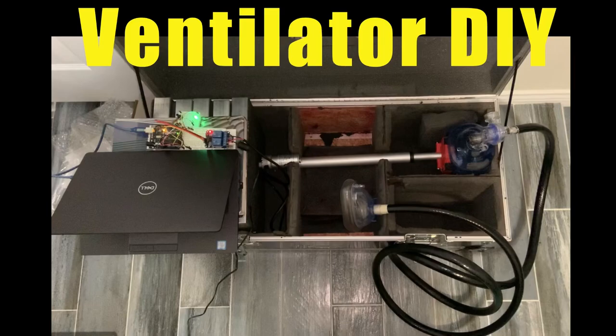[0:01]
Hi, in this video, I'm going to be showing you guys how to make a ventilator out of some common things you can buy off Amazon or hardware stores. With this pandemic going on, calling all engineers and tinkerers to start thinking about cheap solutions to create ventilators as a need across the world is requiring them.
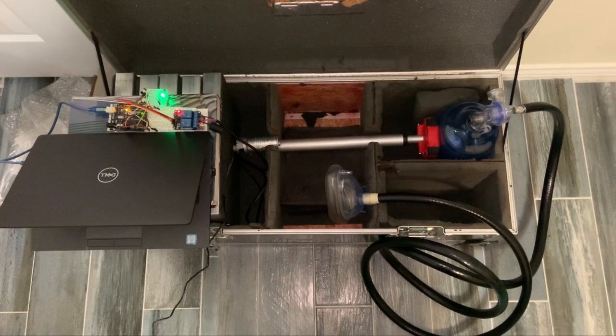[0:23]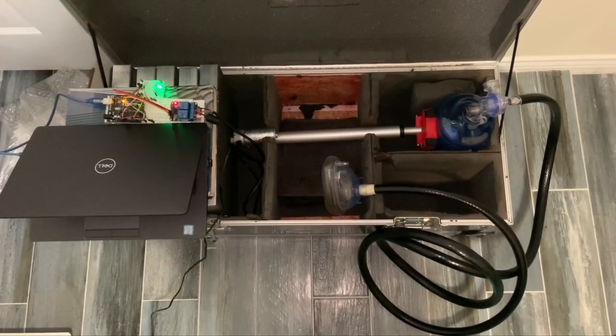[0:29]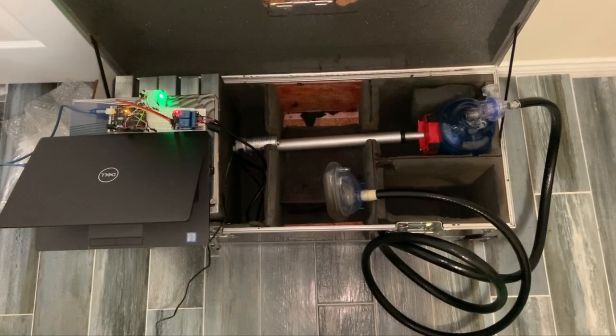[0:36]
So the concept I came up with is using a linear actuator, compressing a BVM bag to supply oxygen to the lungs of a patient. Here's a list of my equipment. In total, it was less than $200 to create this setup.
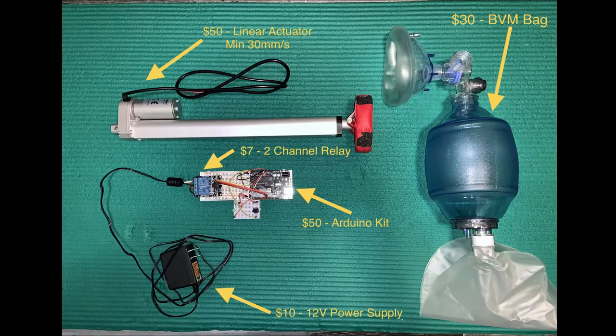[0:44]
You'll first need a BVM bag, which is used for CPR usage. I found mine off of Amazon for less than $30. You'll need a linear actuator that travels from 6 to 12 inches, depending on how you want to set up your fixturing. That cost me $50. I also recommend getting one that moves faster than 30 millimeters per second, which is a little over an inch a second. This ensures that you're going to get the right frequency to compress the BVM bag.
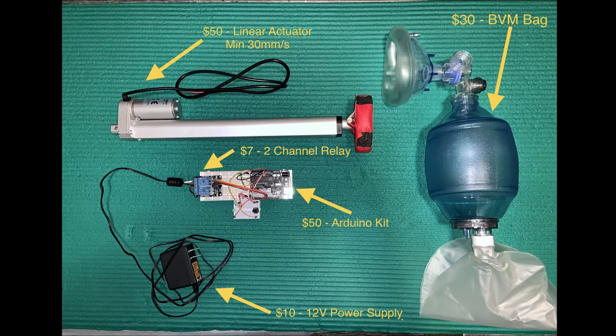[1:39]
Another thing that you'll need is an Arduino kit, which cost me $50 off of Amazon. This provides you with the board and electrical connectors and sensors for everything that you would need. You'll also need a 2-channel relay, also got off of Amazon for $7. This allows you to control the linear actuator, reversing the polarity, allowing it to retract and extend during use to compress the BVM bag. And to power the linear actuator, you'll need a 12-volt power supply. You may have these lying around in your house, but if not, you can find one off of Amazon. I found one for $10, and that's used to power the linear actuator.
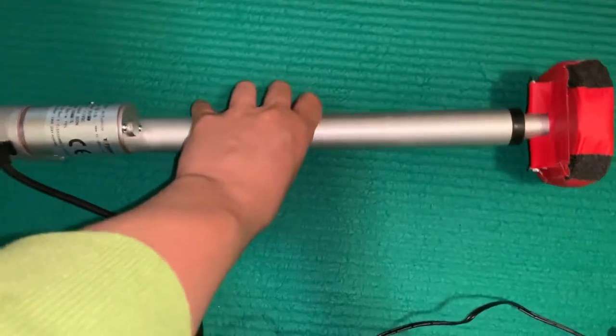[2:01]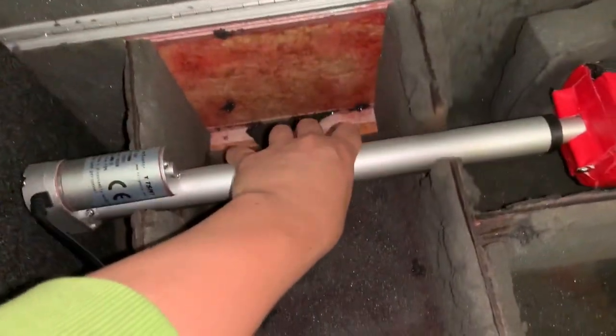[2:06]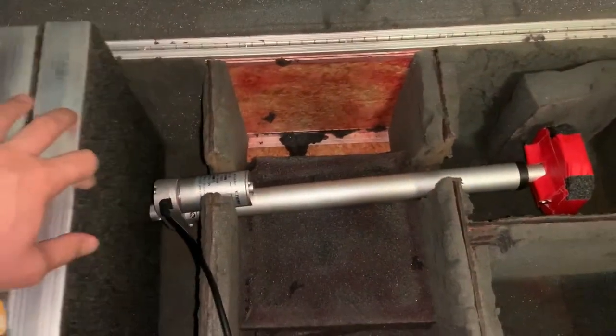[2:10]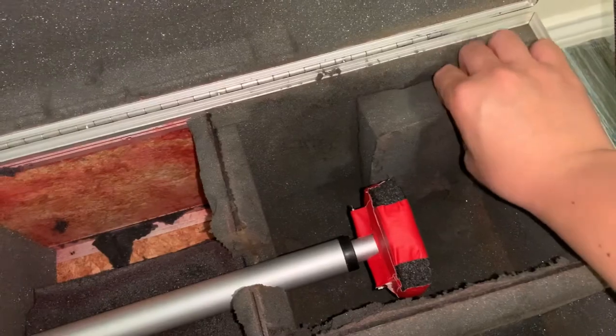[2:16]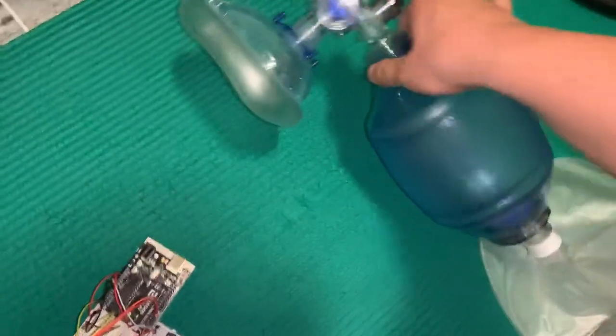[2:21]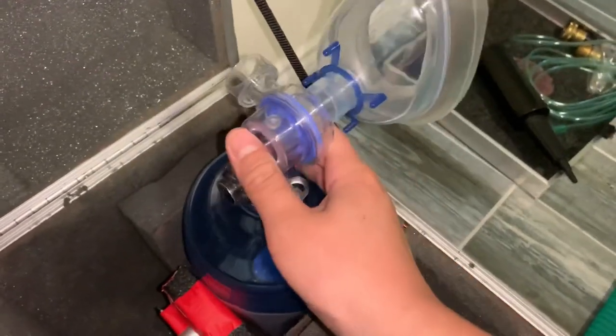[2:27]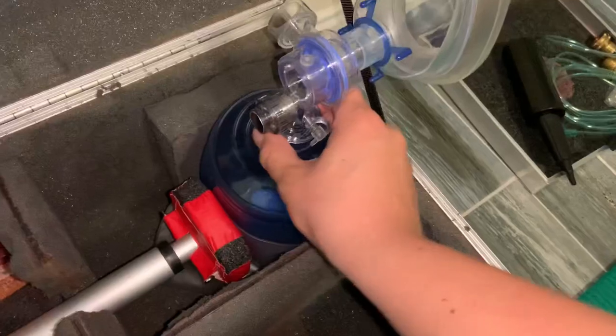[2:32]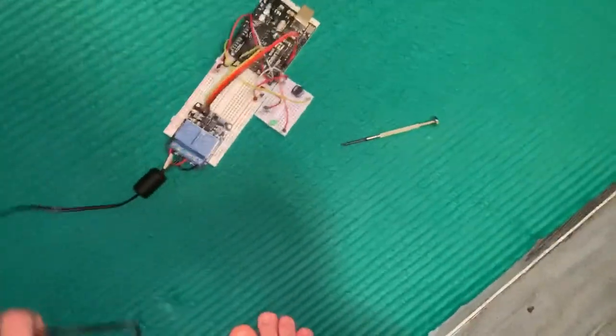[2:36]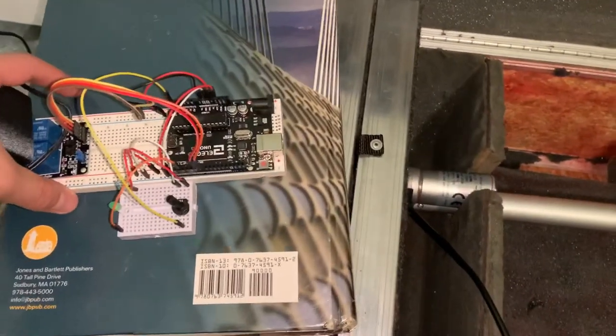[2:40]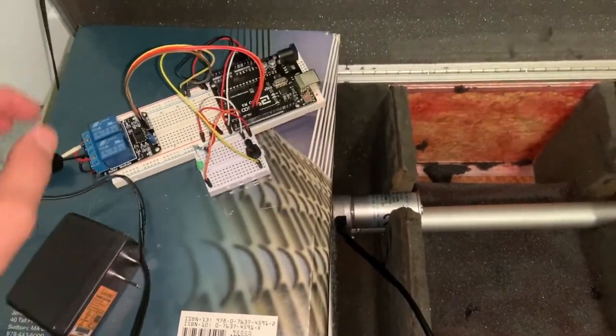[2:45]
So in this section, I am mounting the linear actuator into a housing. You guys can use wood or something to clamp down on the linear actuator so that it allows it to retract and extend on the BVM bag. You'll need something to secure the BVM bag against a wall as well. So here I'm putting it up against a cavity in this box that I have. And then I'm placing the logic board, the Arduino board, near the linear actuator, and I'll be connecting the electrical connectors into the two-channel relay to power the linear actuator.
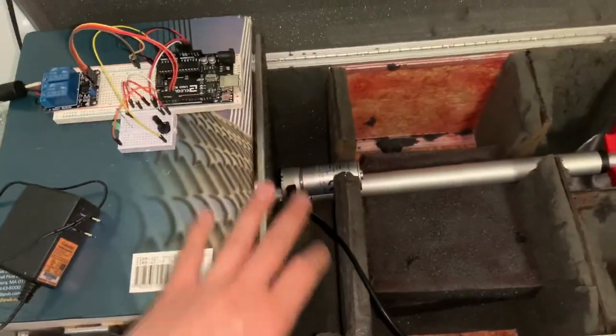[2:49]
So here is the wiring setup for the Arduino and the two-channel relay. On the left, you see there's a two-channel relay that's connected to the Arduino board. So there's four lines. One line is going to a 5-volt line to power the two-channel relay. One line is to ground. And two, the red and the orange, are connected to the digital pulse width modulator pins on Arduino, channel 6 and 7. This is where I would send commands to the relay to reverse the polarity of the 12-volt signal to extend and retract the linear actuator.
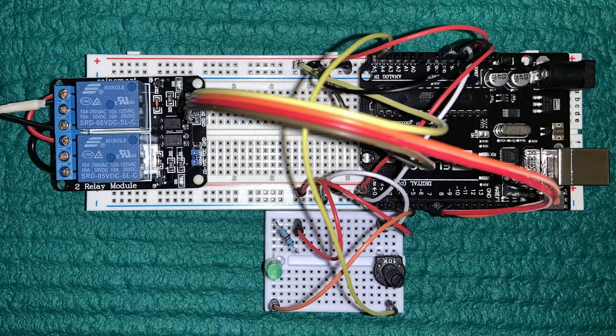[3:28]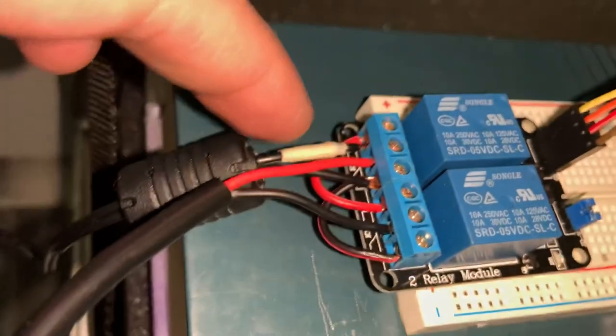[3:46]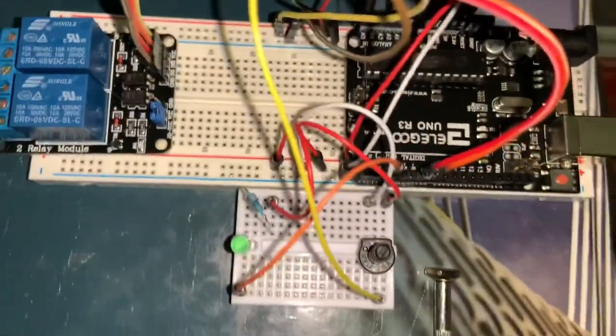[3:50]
At the bottom there, I have a potentiometer to provide the adjustment for frequency to compress the BVM bag. So here's a shot of how I connected the linear actuator to the two-channel relay to control that logic.
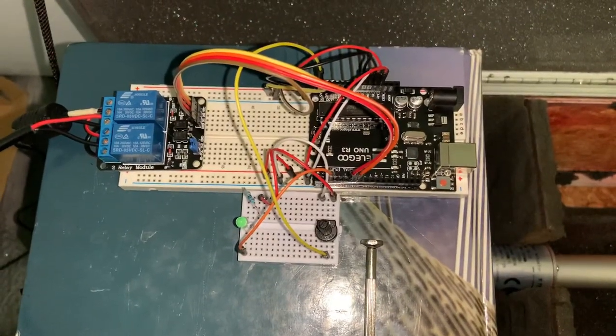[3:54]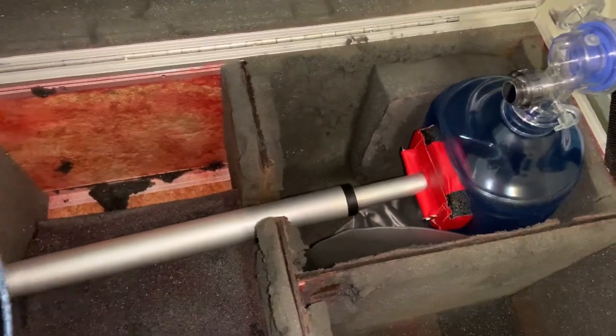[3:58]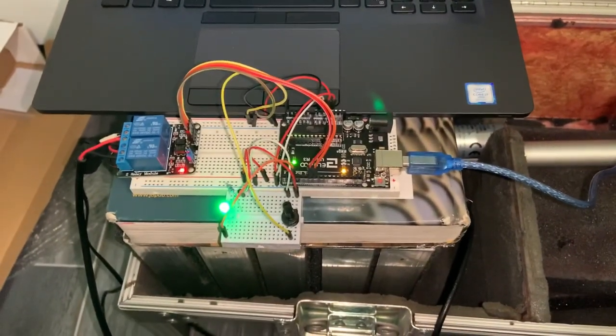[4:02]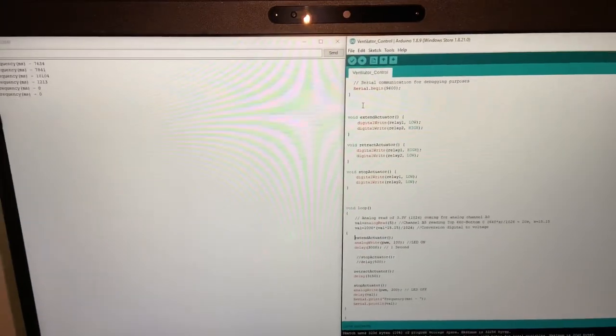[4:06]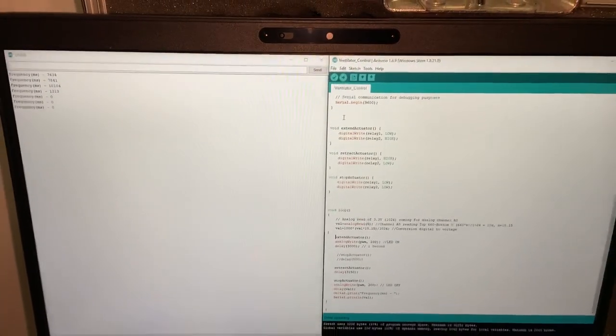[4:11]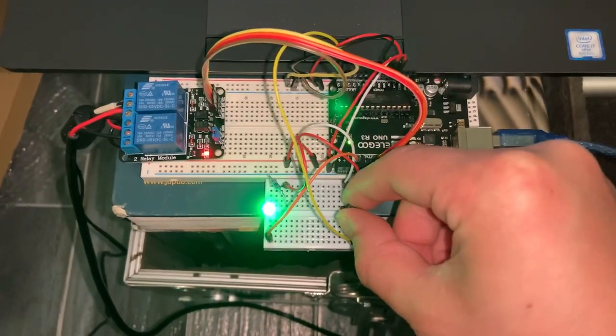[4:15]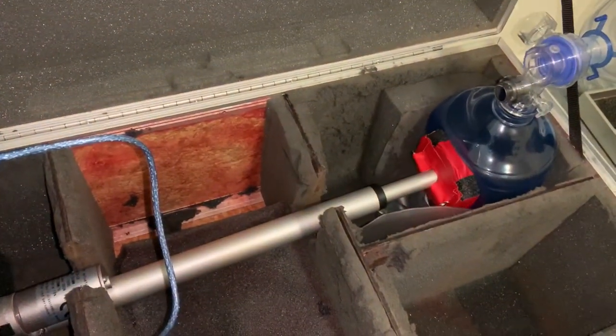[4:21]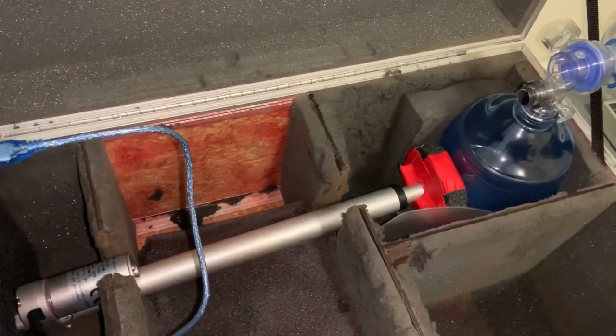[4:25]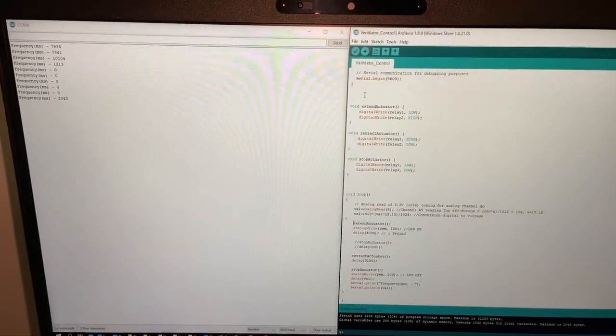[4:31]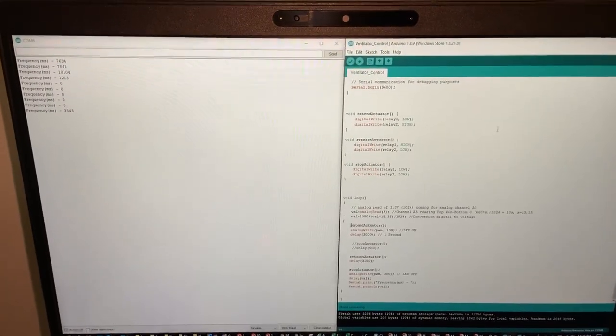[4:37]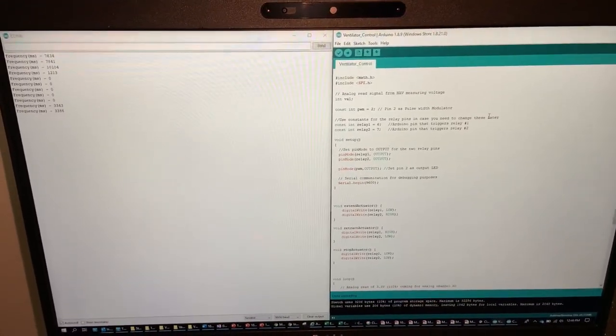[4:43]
So once everything's connected, I'm now going to walk you guys through the Arduino code. So here's a setup where I have it connected to my PC to upload the script into the Arduino board. On the right is the code that I have. Right now, how it's running is that it is allowing the linear actuator to move for 3 seconds and reverse in 3 seconds and then wait a period of time. And for that logic, for a period of time, I'm using a digital potentiometer to provide that frequency rate that you're seeing on the left on the screen here. So right now it's around 3.3 seconds of frequency of how much the linear actuator is actuating the BVM bag.
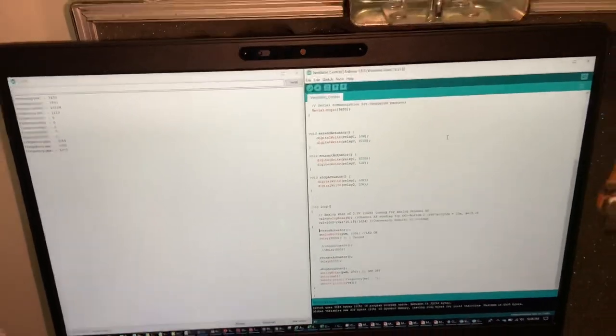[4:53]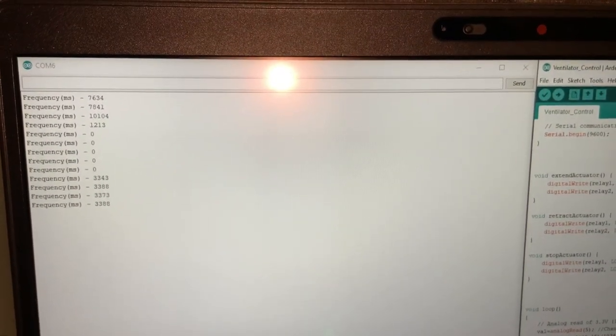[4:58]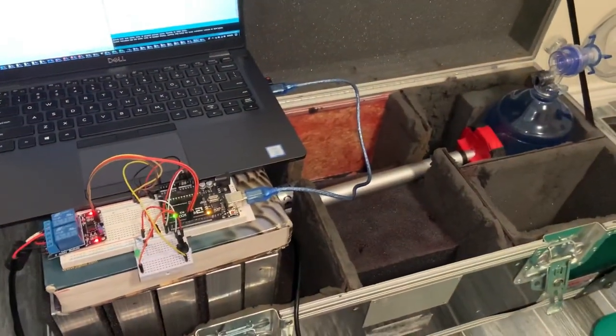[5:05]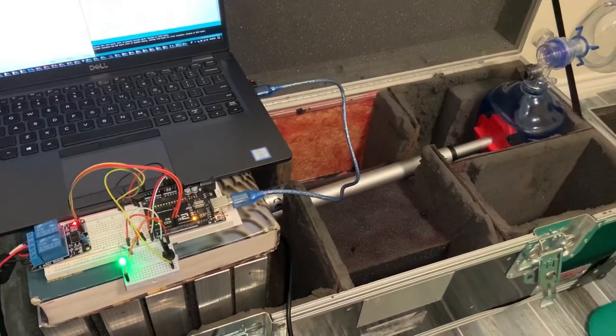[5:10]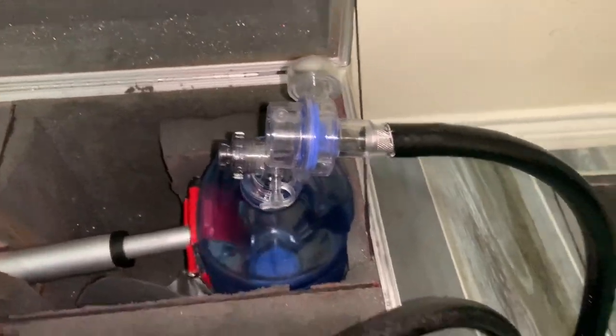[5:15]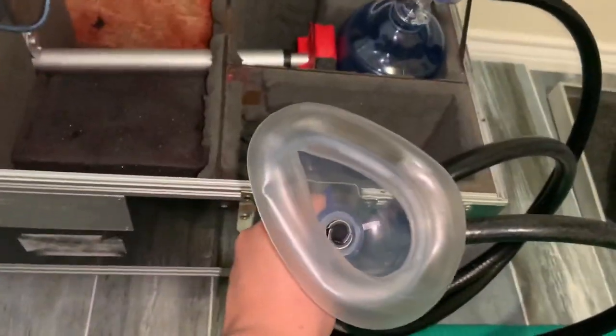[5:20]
So you can have a fine adjustment depending on your situation where you need to be providing quite a bit of air frequently or slowing it down so that it does not damage the patient's lungs. So once you've uploaded your code to the Arduino board, you no longer need your PC. All you need to do is connect a 12 volt power supply and the system will operate within its own system. So once you have your BVM bag secured to the fixture, you'll need a tubing line that can extend to the face mask.
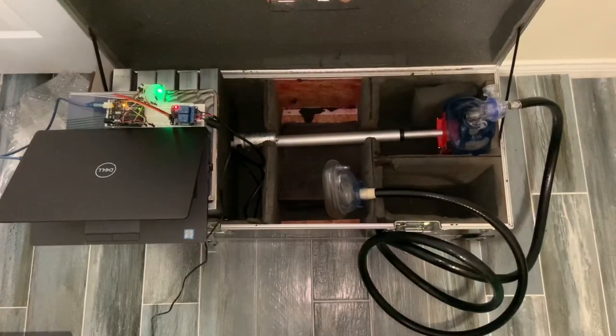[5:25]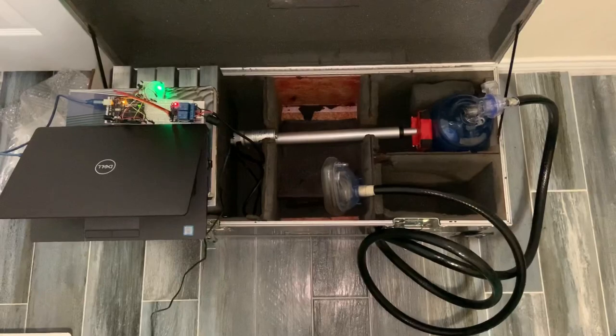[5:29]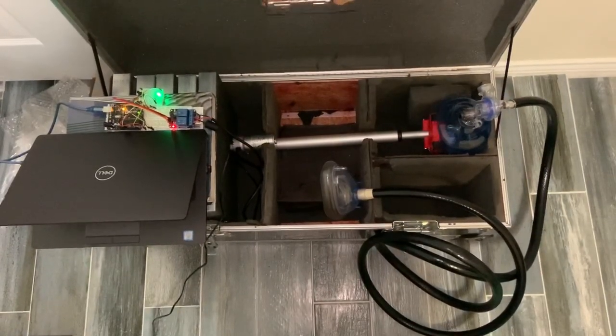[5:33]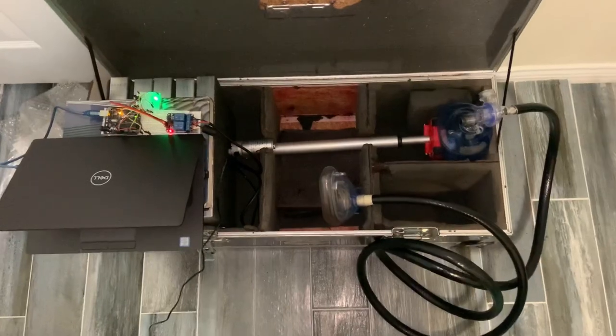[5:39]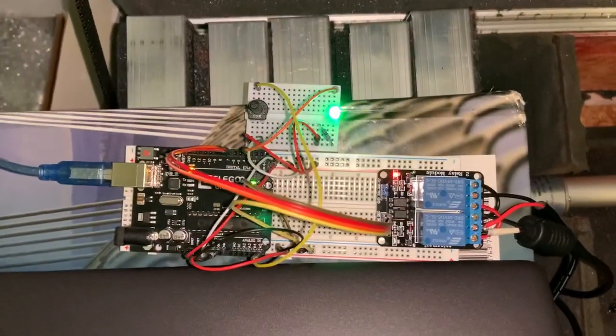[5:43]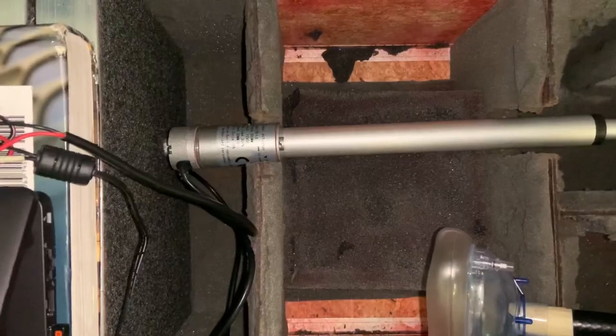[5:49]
I hope this video was educational to my fellow engineers and tinkerers. Hope this inspires you to contribute to this cause and to find better and efficient ways of developing ventilators for your community. While we may not individually have the resources to develop the hundreds and thousands of ventilators, at an individual level, we can help out our communities and find a better solution to solve this and get us over this trying time in our history.